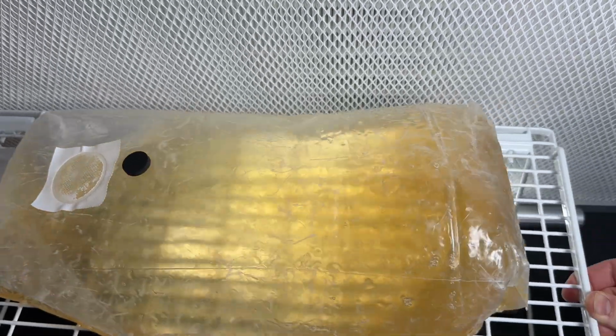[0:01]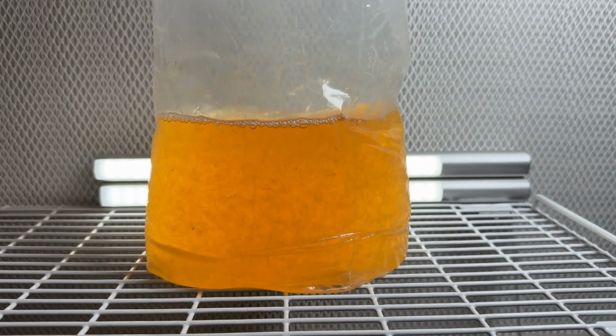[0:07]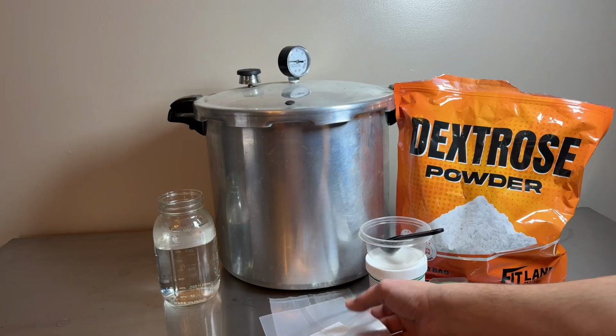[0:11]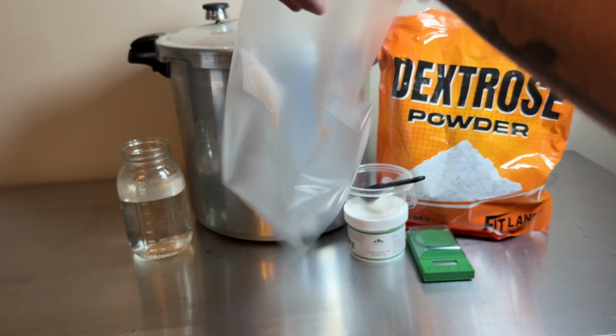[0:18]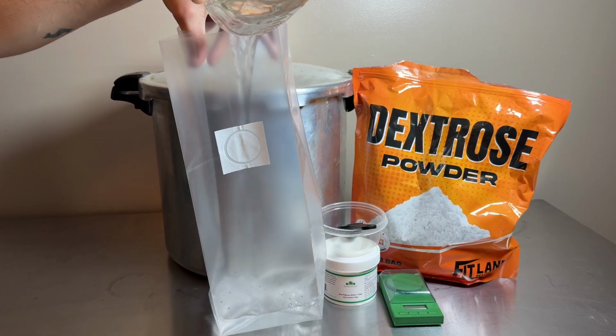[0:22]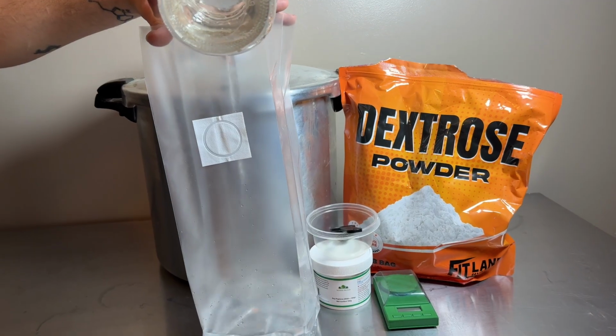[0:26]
This is my homemade mushroom liquid culture bioreactor bag. I normally grow mushroom liquid culture in jars with a magnetic stir bar and plate to break up the mycelium as it grows, but by using a filter patch bag, I can just massage the bag to break up the mycelium or agitate it on a moving table back and forth instead of using a magnetic stir plate. And also, the bags take up less space.
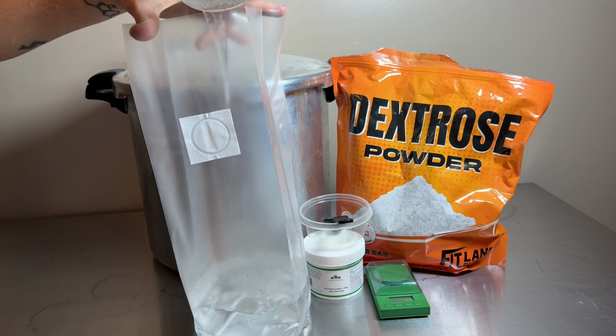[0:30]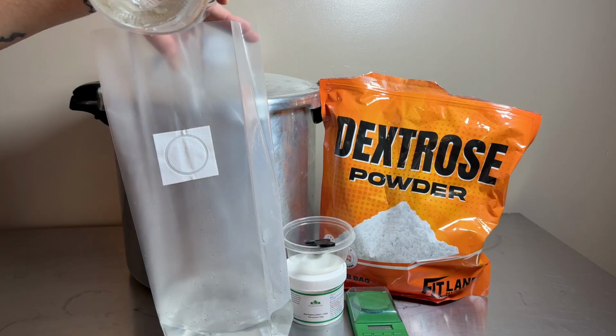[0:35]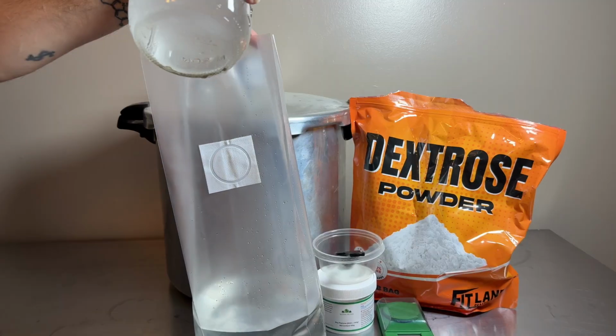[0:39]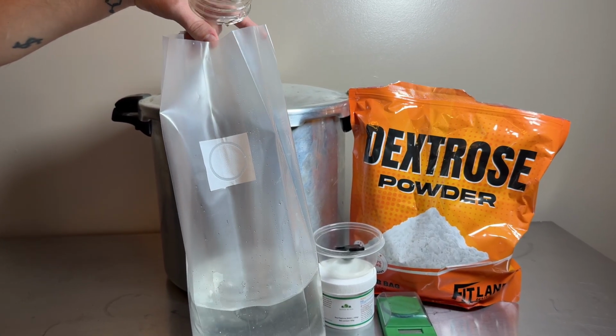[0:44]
To start making the mushroom liquid culture bioreactor bag, I add 2,400 milliliters of warm water to a filter patch bag that has a waterproof filter. I buy these specific bags from Amazon, so I'll make sure to leave a link for that in the description.
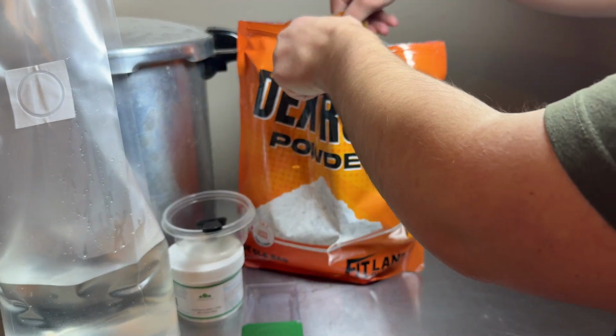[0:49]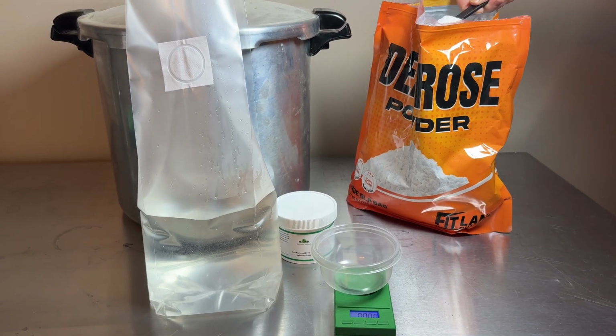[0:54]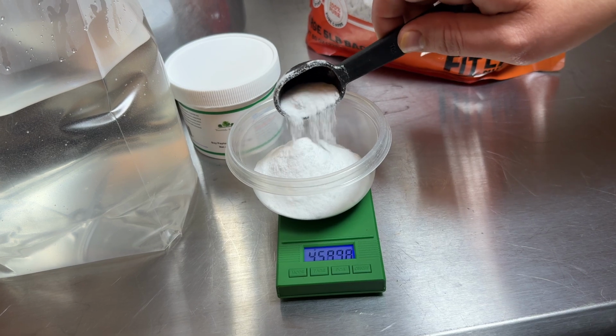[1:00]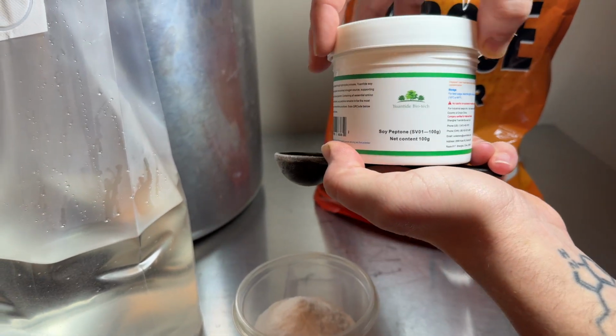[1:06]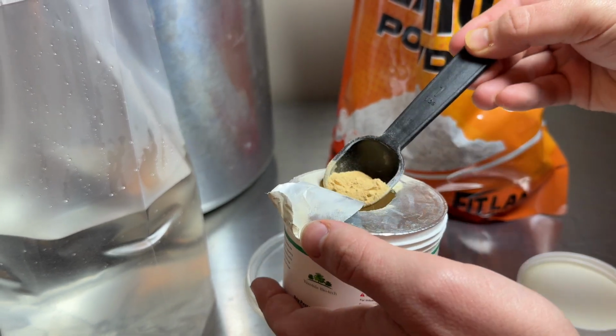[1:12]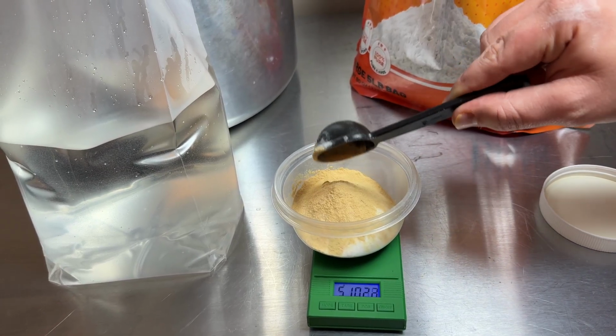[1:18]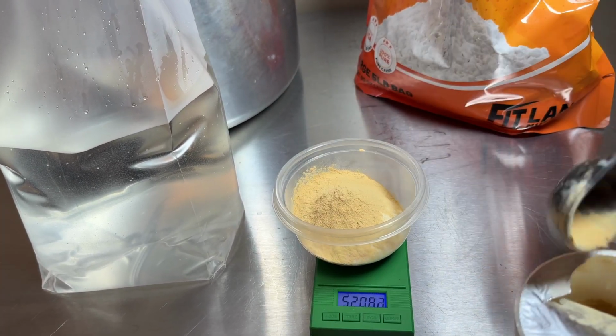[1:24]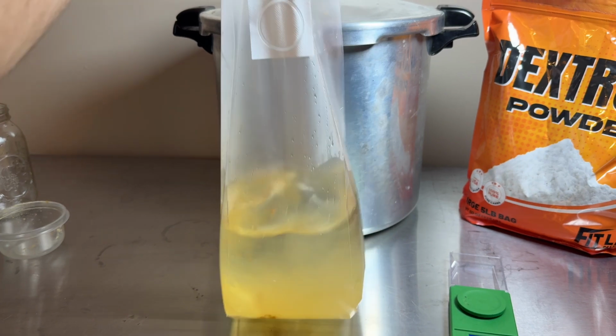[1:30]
So to make the liquid culture media, I'm using dextrose powder and soy peptone. I weigh out 48 grams of dextrose powder and 4 grams of soy peptone. I also got these two ingredients from Amazon, so I'll leave those links in the description as well. So I just add the mixture of soy peptone and dextrose into the warm water and let it dissolve.
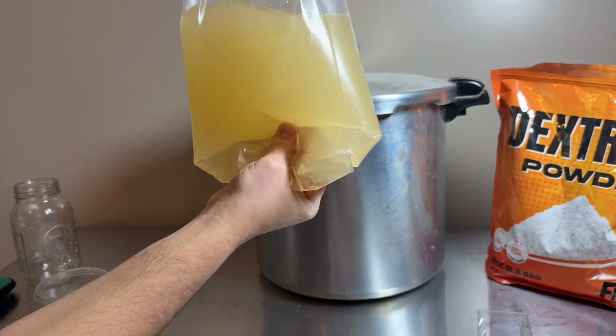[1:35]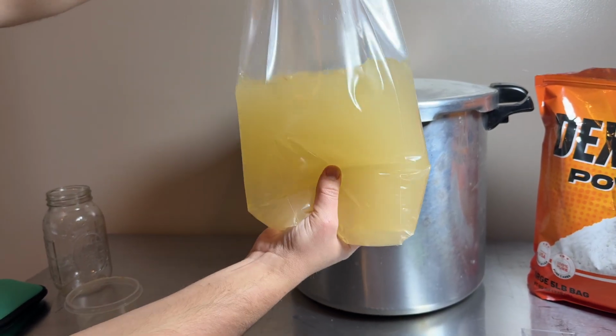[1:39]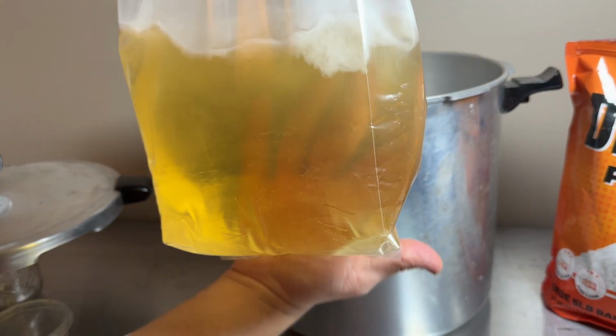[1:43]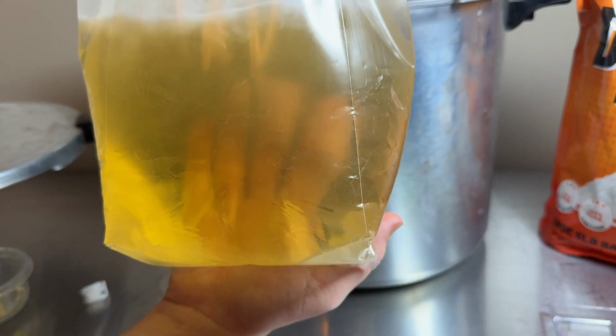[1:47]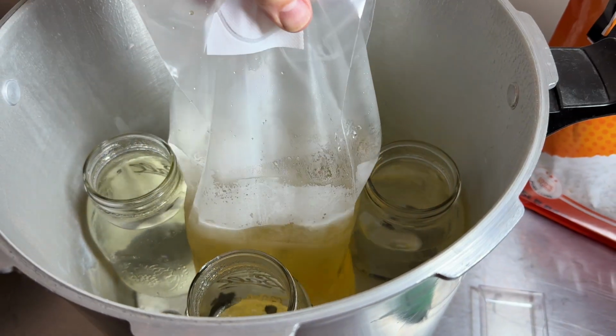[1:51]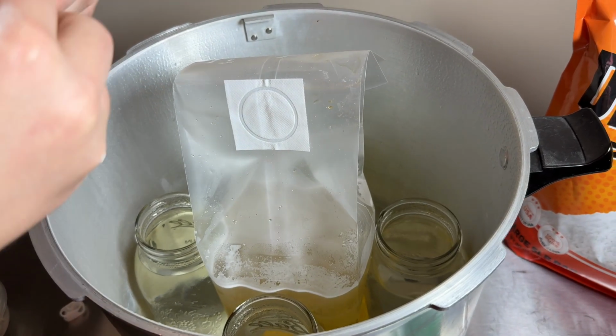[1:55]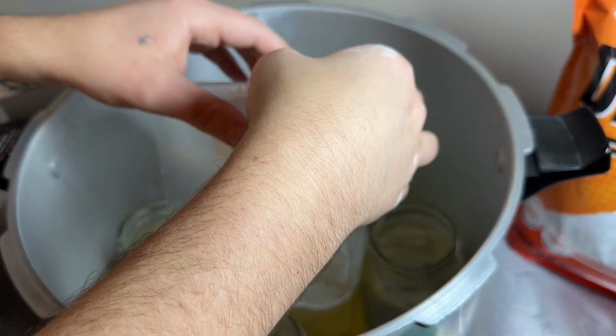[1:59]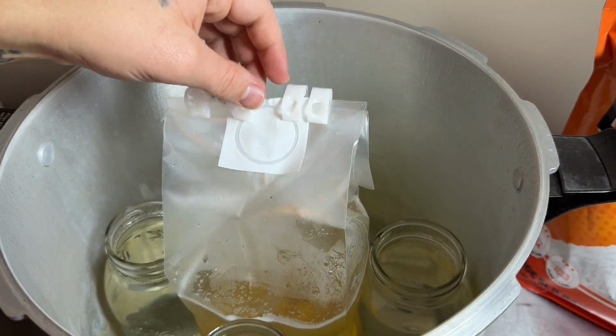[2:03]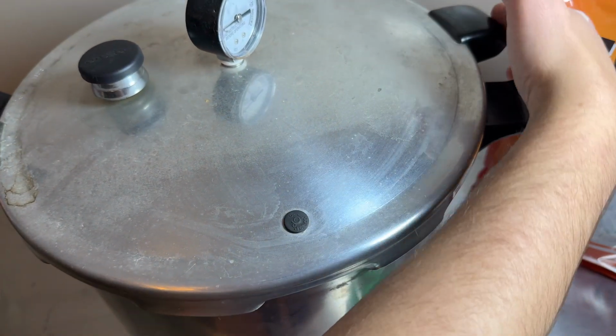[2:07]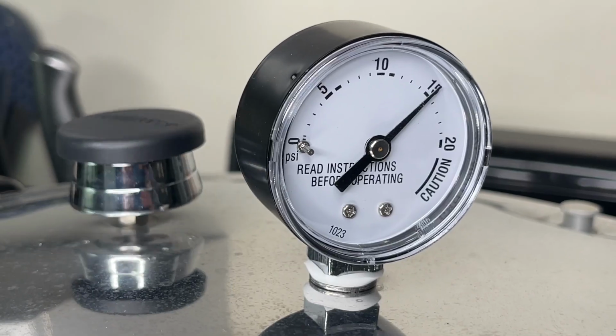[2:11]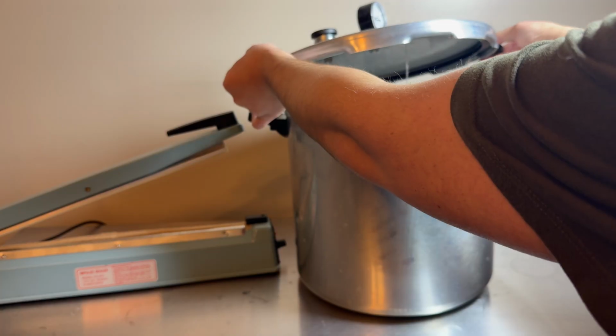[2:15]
The next step is to sterilize the bag, so I put it inside of a pressure cooker with 4 jars of water on all corners to keep it supported, and then I add these little clips to the top fold of the bag to keep it shut. I pressure sterilized the bag at 15 psi for 25 minutes. I let the pressure cooker cool down naturally overnight.
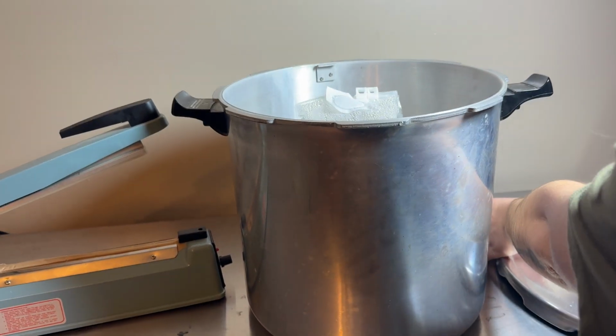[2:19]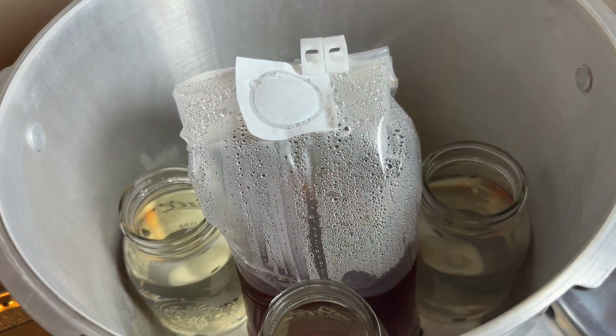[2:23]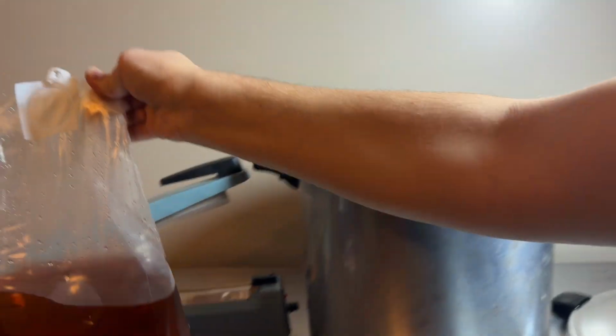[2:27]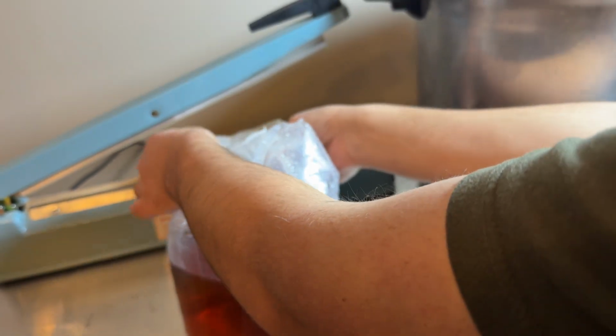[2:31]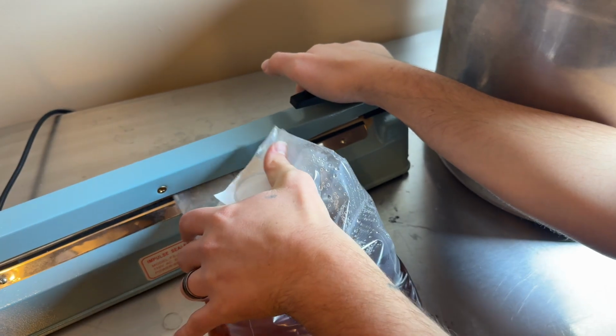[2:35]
And in the morning, I remove the bag of liquid and use an impulse sealer to seal the top of the bag. I recommend to do this part in front of a laminar flow hood or inside of a still air box, just so you're not risking contaminating the bag before it's sealed.
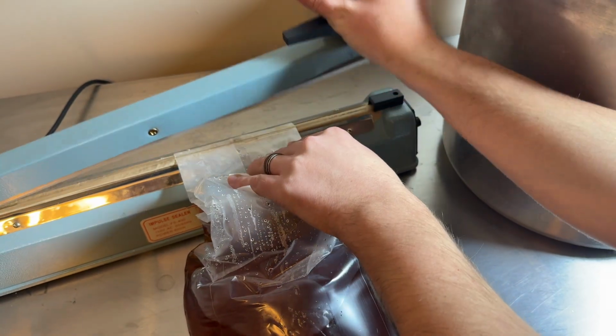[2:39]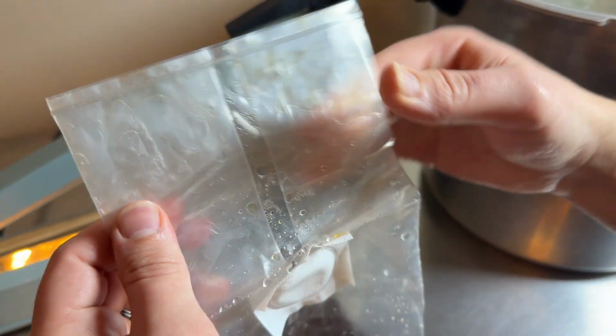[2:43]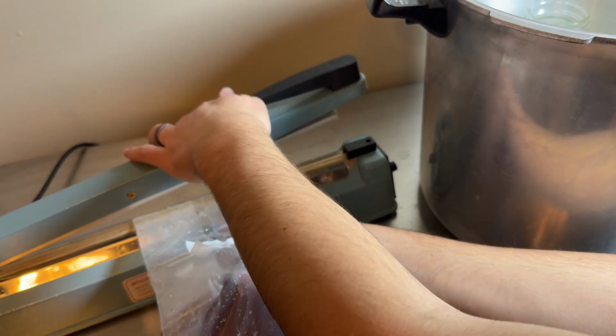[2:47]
I impulse seal the bag twice, and after it is sealed, I don't lift the top right away. I let it completely cool down, or else you're melting and ripping the plastic when you do that.
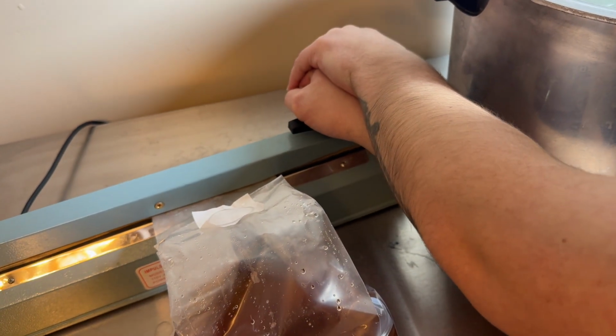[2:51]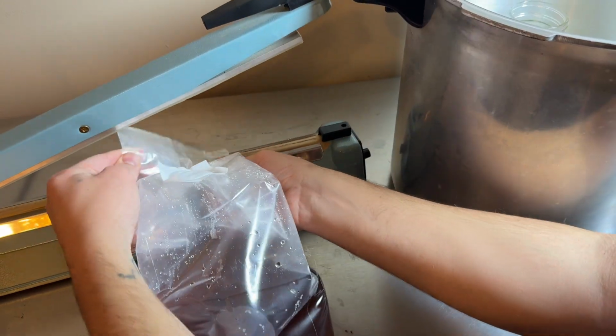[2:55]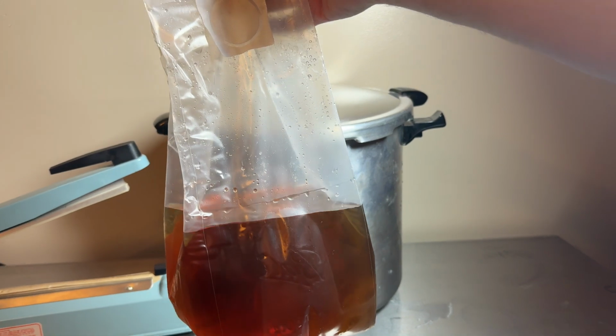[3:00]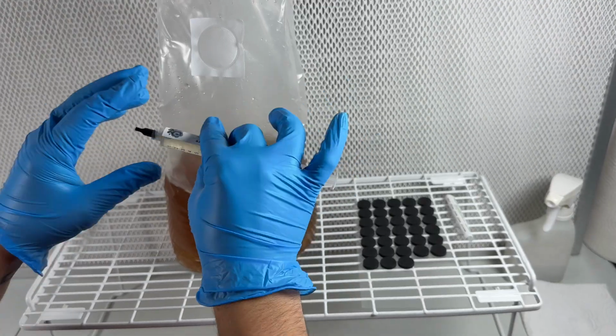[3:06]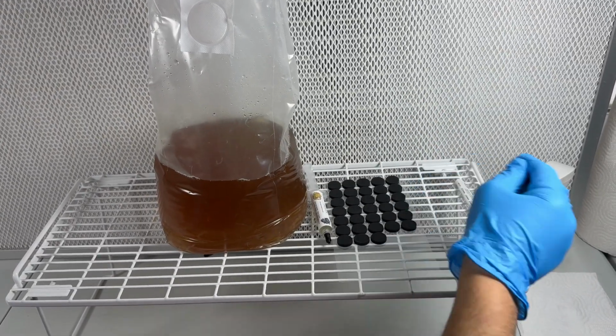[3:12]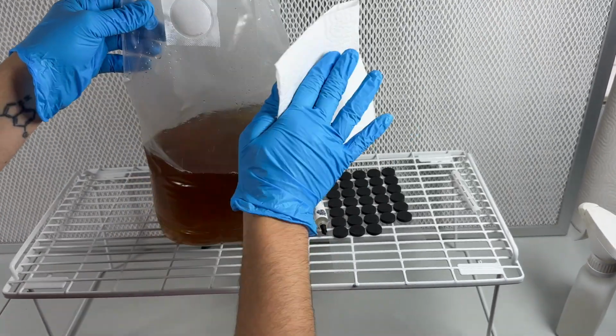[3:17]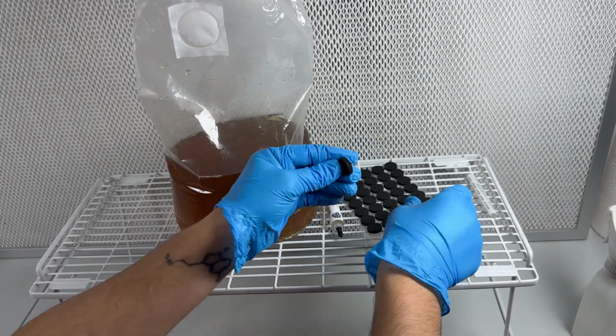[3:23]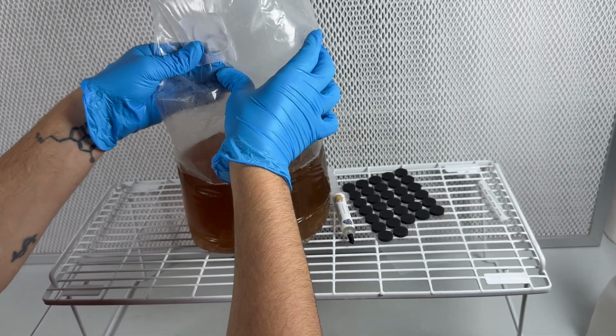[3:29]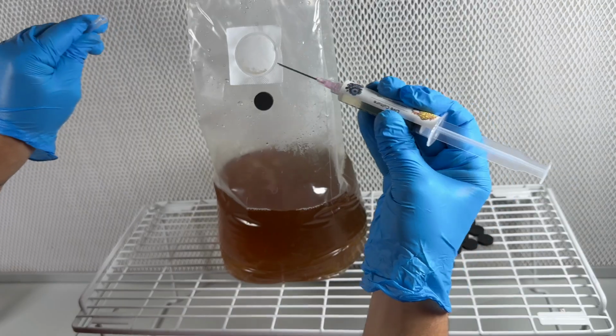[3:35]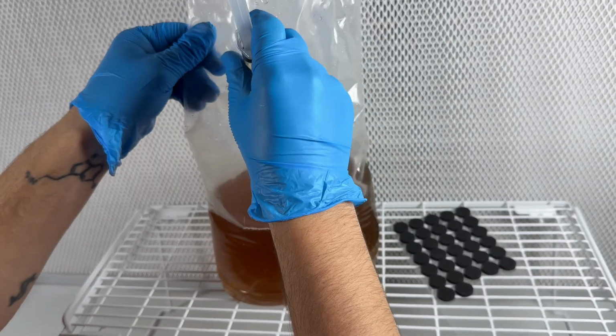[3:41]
Now that the bioreactor bag is pressure sterilized and sealed, it's time to inoculate it with mushroom liquid culture. I wipe the bag down with isopropyl alcohol, and then I attach one of these sticky injection ports onto the bag. I inoculate the bag with the whole syringe just for the sake of time. You could get away with 2 milliliters and it'll just take longer to grow.
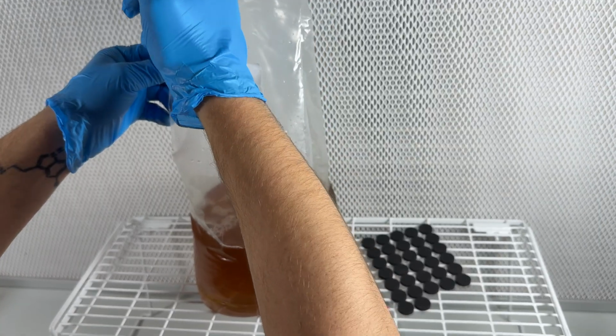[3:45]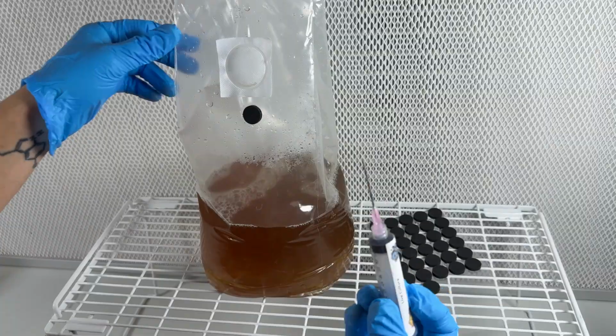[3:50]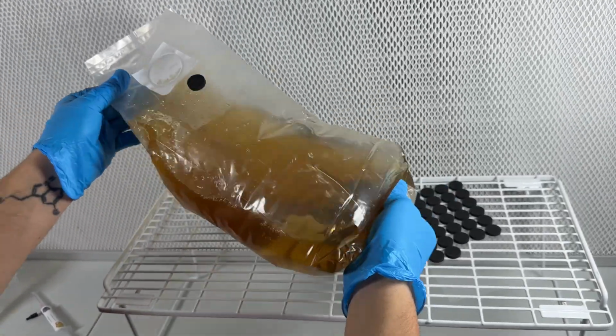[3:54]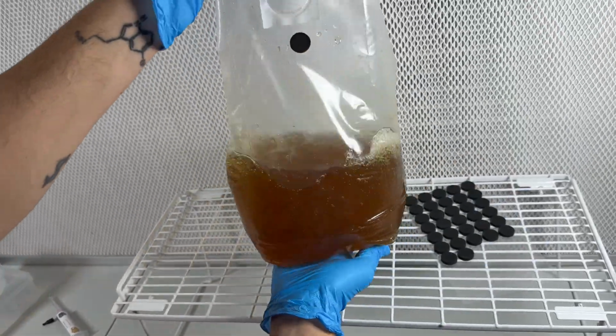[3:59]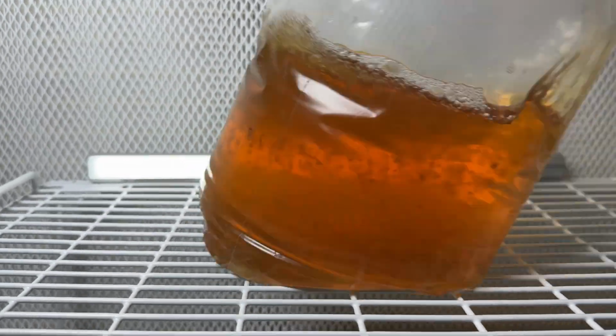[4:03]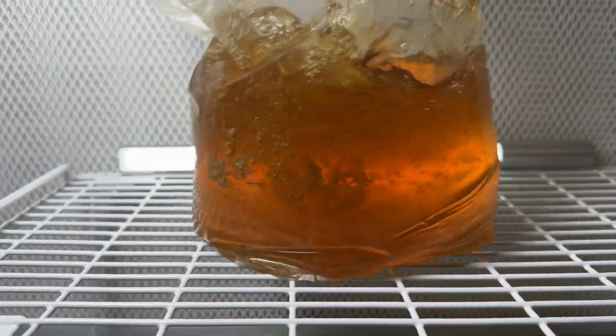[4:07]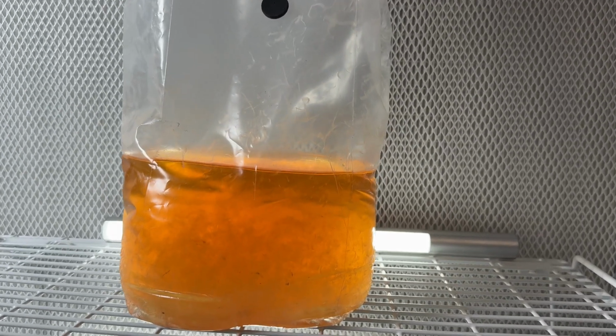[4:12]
After inoculating the bag, I just set it on a shelf in a warm room around 75 degrees Fahrenheit and let the mycelium grow. Then every day or two, I'll just agitate the bag by splashing it back and forth. After about 1 week, I could already see the mycelium growing more and more each day. And after 1 month, the mycelium had almost completely colonized the whole bag of liquid.
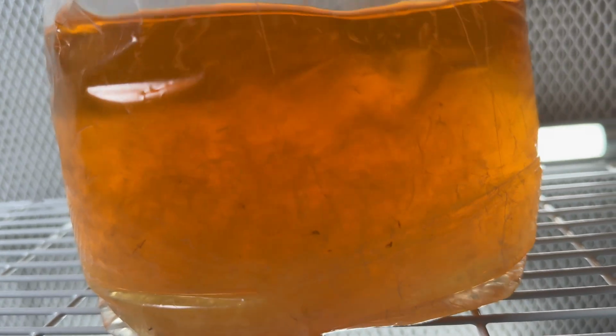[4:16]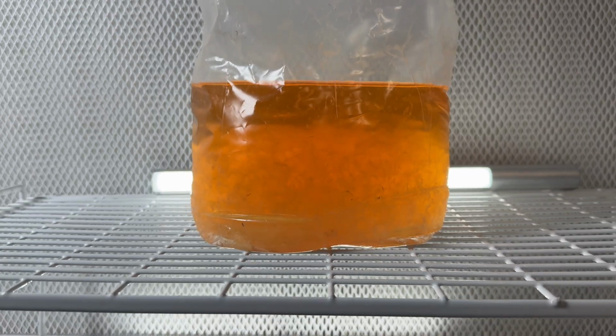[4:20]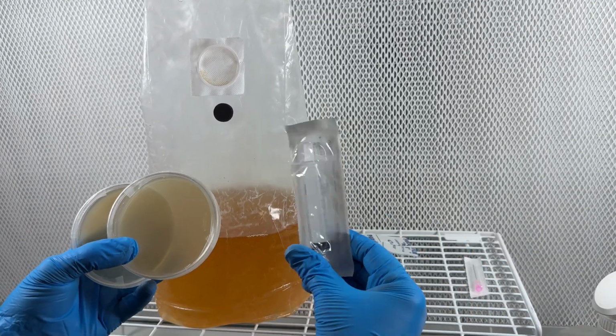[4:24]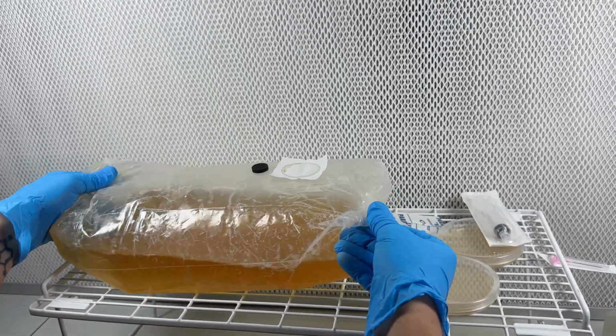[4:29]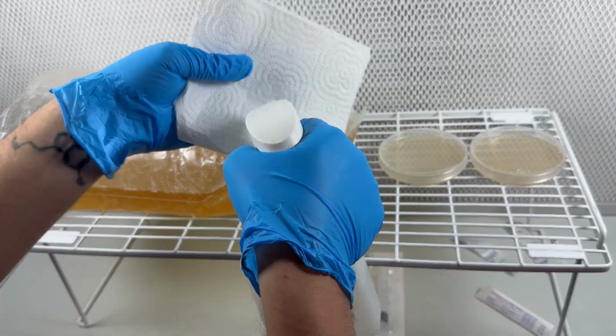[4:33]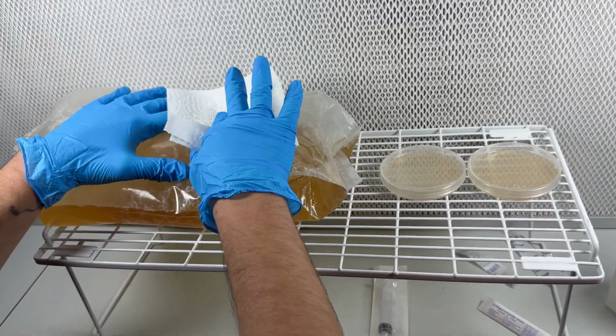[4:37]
Now that the bioreactor bag has grown enough mycelium, I had to test the liquid and make sure that it's not contaminated. I wipe the injection port down with isopropyl alcohol, and then I use an empty sterile syringe and needle to extract a little bit of the liquid from the bag.
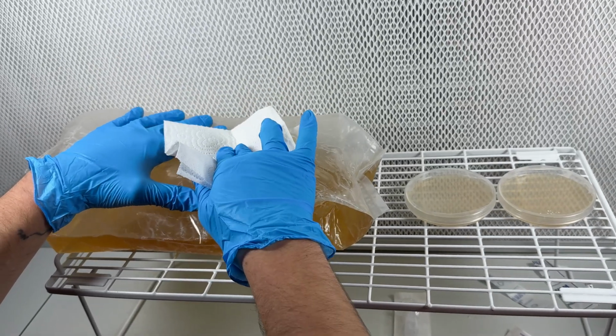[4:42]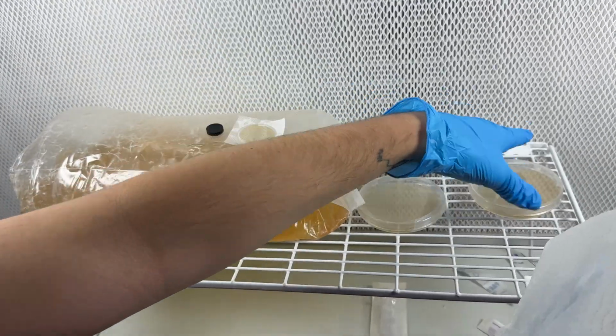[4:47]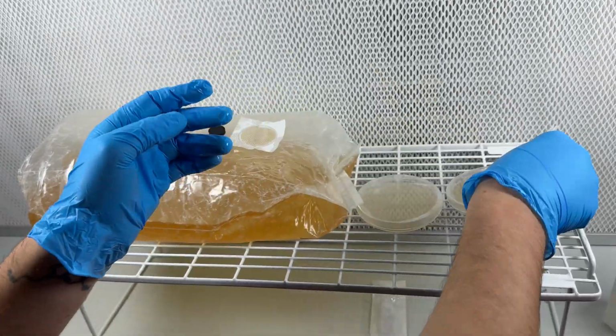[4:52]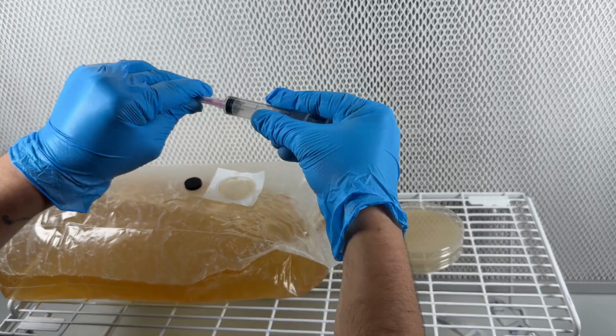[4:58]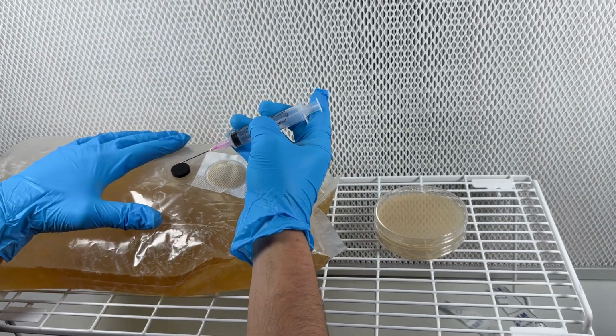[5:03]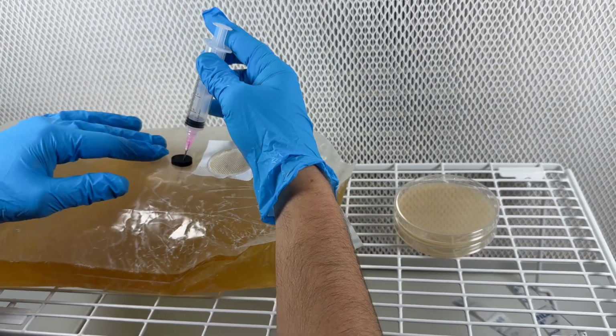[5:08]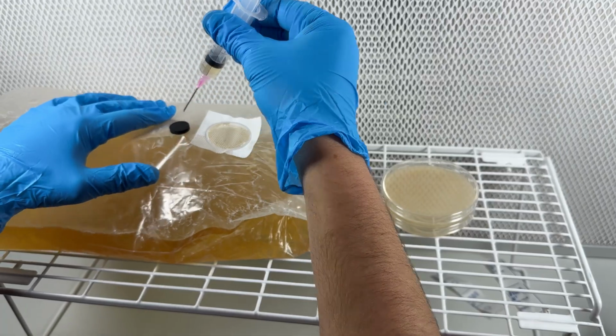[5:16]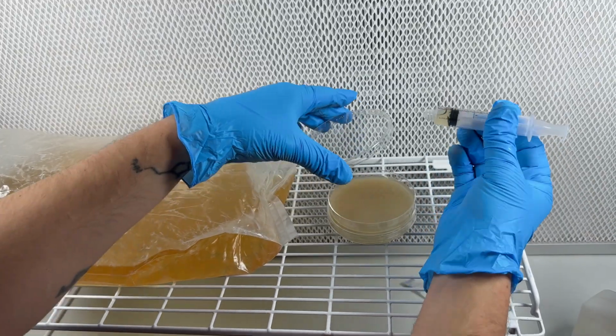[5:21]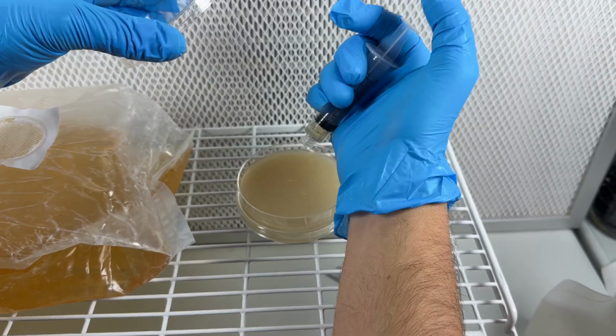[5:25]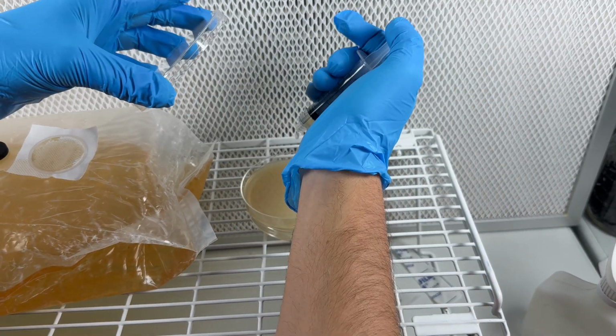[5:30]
So I just put a few drops of the syringe on each of the agar plates, and then I'll use some parafilm to seal the plates and incubate them for about 1 week to see if any contamination shows up on the agar plates.
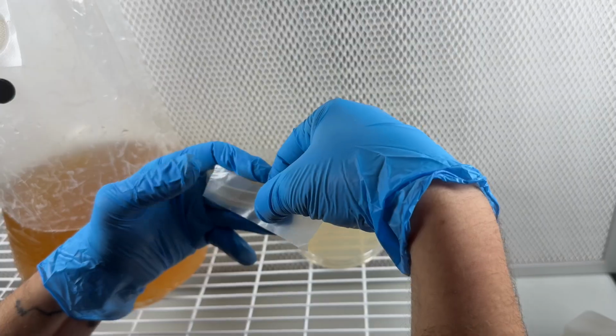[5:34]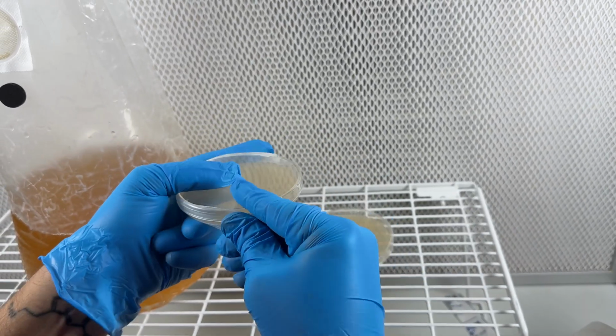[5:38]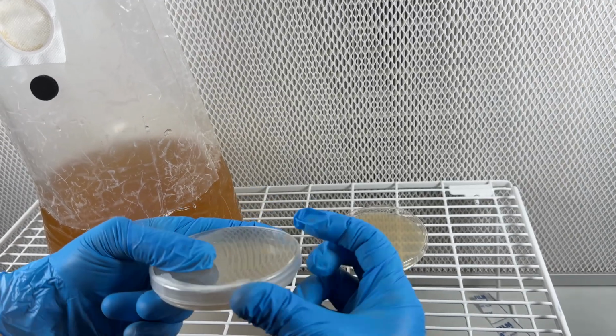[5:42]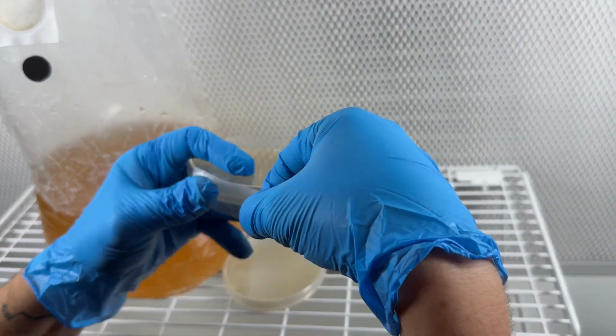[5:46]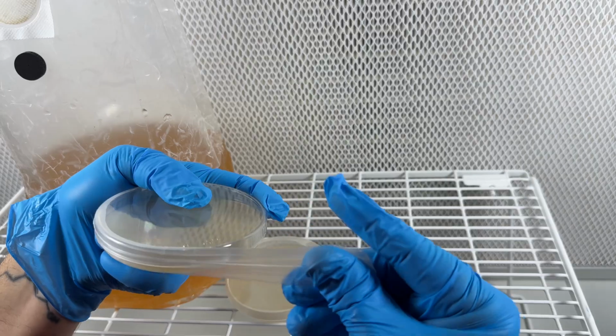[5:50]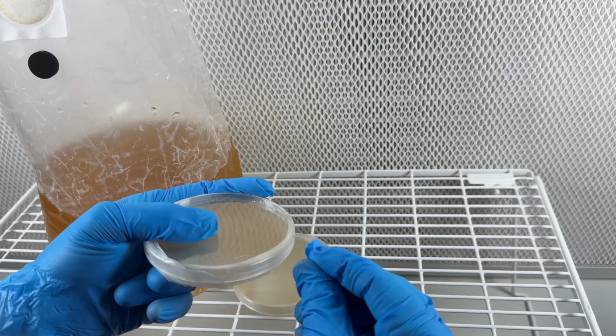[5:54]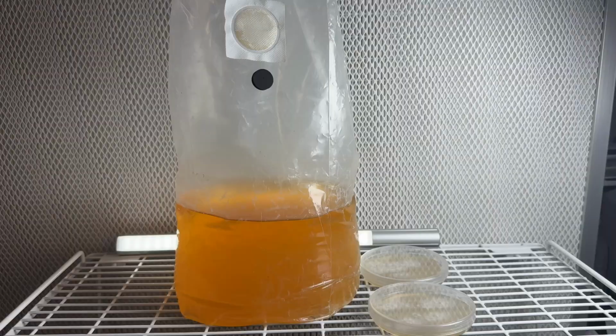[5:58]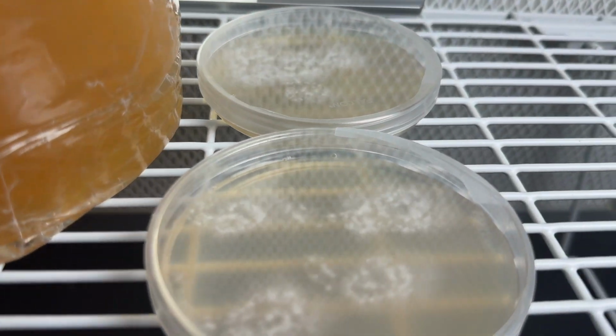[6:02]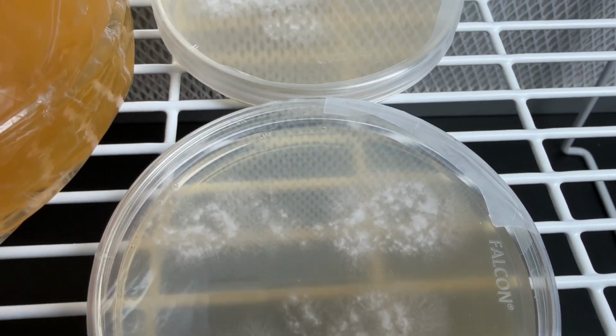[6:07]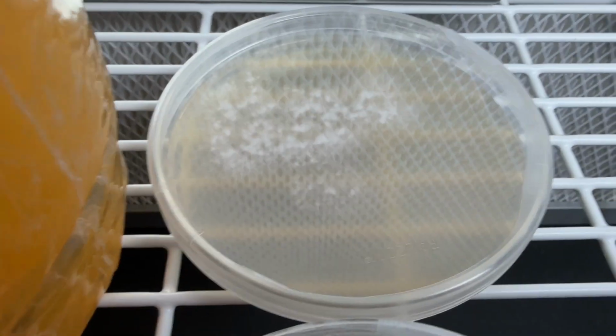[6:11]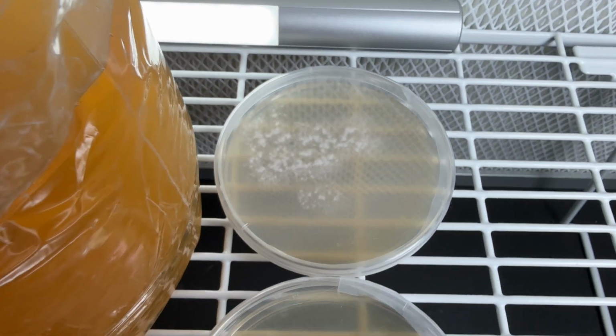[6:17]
After 7 days of incubating the agar plates, there was no signs of bacteria, yeast, or mold, only the healthy growth of mushroom mycelium. So this means the mushroom liquid culture bioreactor bag was a success for me, and I'll probably start making a lot more of these.